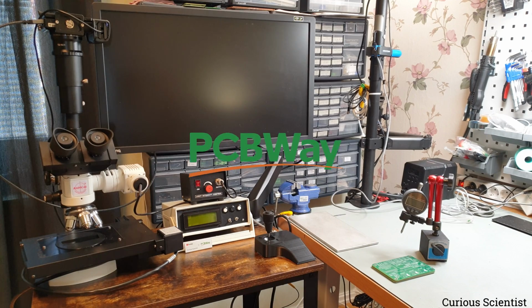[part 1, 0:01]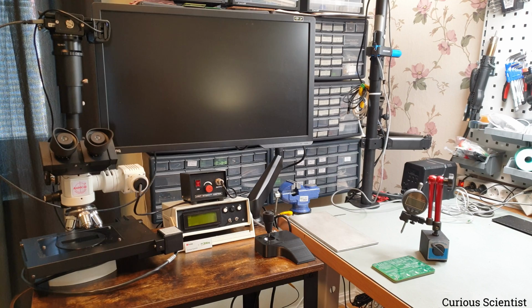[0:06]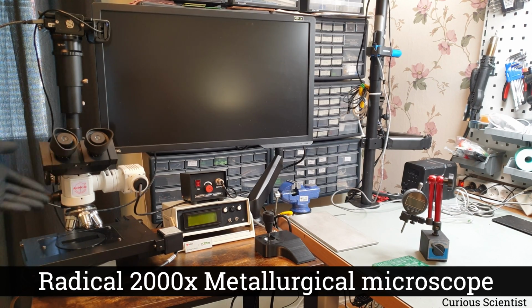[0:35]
Welcome everyone. In this video I'm going to show you the final condition of my motorized microscope. In the previous video I showed you that I assembled the circuit to control the microscope, and I showed you the basic principles of it and how it operates, but not everything was finished in a way I wanted to. So now everything is finished, so I can show you how it works and I can demonstrate the capabilities of this system. Just a little refresher, we have an optical microscope here.
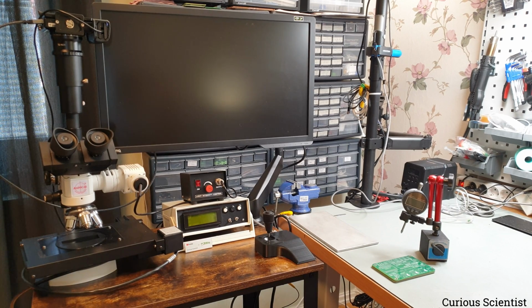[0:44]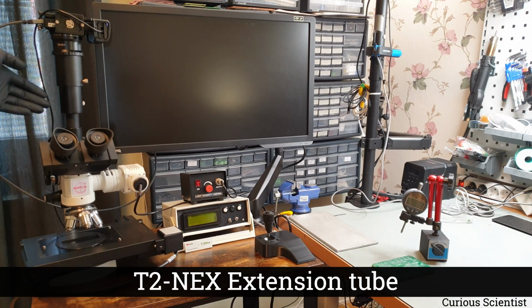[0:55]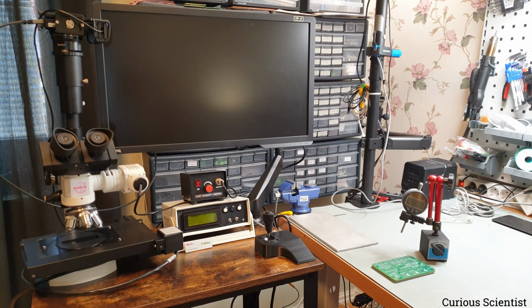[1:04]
It has 4 lenses, and now as you can see it has a motorized XY stage, but in addition to that the Z axis is also motorized. I will show you how it is motorized when I move the camera there. And on the top of this microscope there is an extension tube, and on top of that there is a mirrorless camera which through an HDMI cable transfers the image to that big monitor. So this whole thing is sitting on a cart, and then I just use the monitor arm to have the monitor floating above everything. So it's a very convenient arrangement.
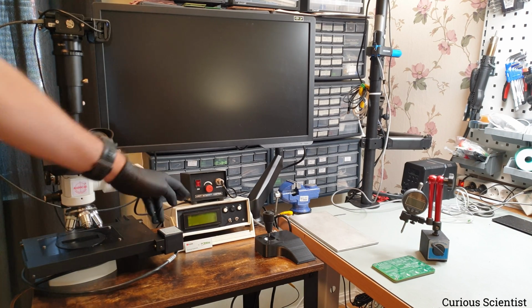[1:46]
And then here we have a box which adjusts the brightness of the light, which is the light source for the microscope itself. So basically the illumination. It's just a halogen light inside this part, and that illuminates the surface of the specimen that we are inspecting. And then under that there is a more important box, and I will show you it inside out when we move closer to it. But that's basically the controller there.
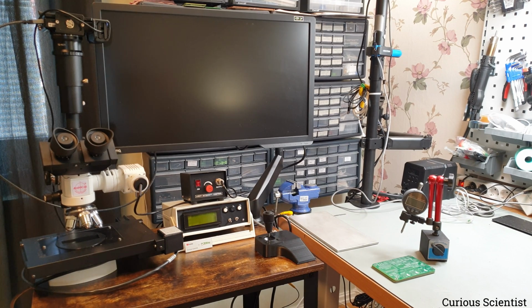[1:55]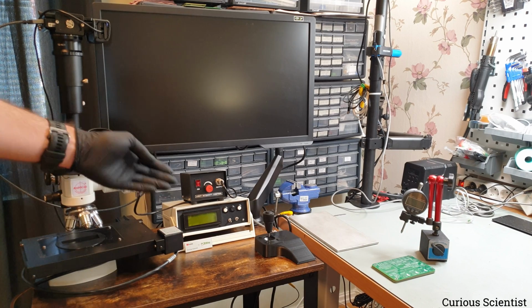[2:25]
It has a display which can be used to display all the relevant information regarding the position of the stage, the condition of the stage, whether we are homing, moving, or the system is in a standby status, and so on and so on. It has 3 buttons, a moving forward and moving backward button, plus an abort or stop button. It has 2 switches because you can select between the modes, like joystick mode, button mode, and you can even control this thing via USB, so you can select that. And when you are in button mode, since we only have 2 buttons, you have to pick an axis, so you can control 1 axis at a time. With the help of the selector switch, we can say that we try to move the X, Y, or Z axis, and then the buttons just move the selected axis.
And there is even a status LED. You will see it better when I move closer to the front panel. And that LED, similarly to the display, tells the user what is happening. There are different colors because it's an RGB LED, and there are different behaviors, let's say solid light or blinking light, and that will tell us what is happening to the system.
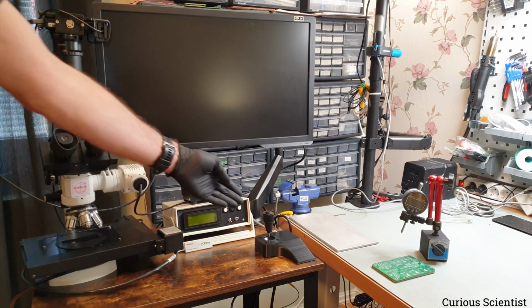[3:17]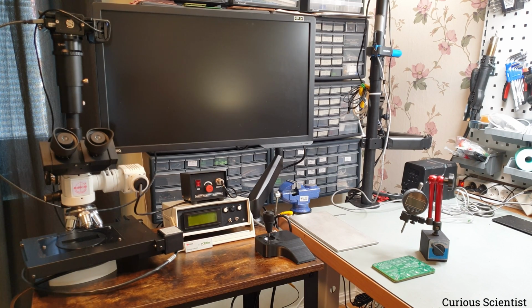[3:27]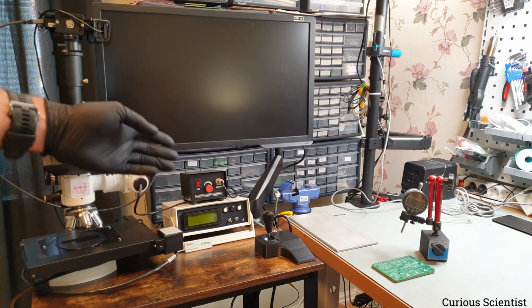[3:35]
And finally, we have a joystick. It's a 3-axis joystick, so it can move left and right, up and down, and then I can even twist the joystick, which actually moves the Z-axis. The joystick is connected, and the system is programmed in a way that the movement of the joystick is replicated by the stage. So if I move the joystick towards the left, then the stage moves in the left direction, and so on and so on. So let's move closer to the box and see what is there.
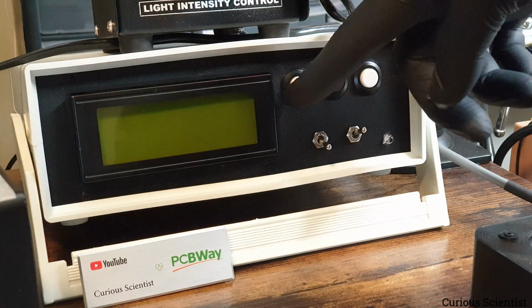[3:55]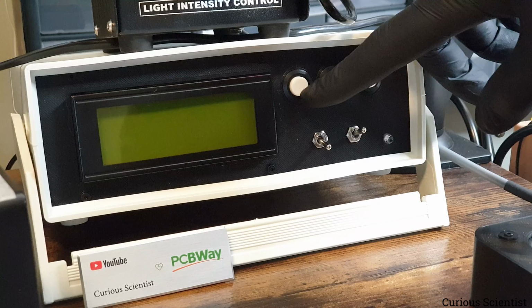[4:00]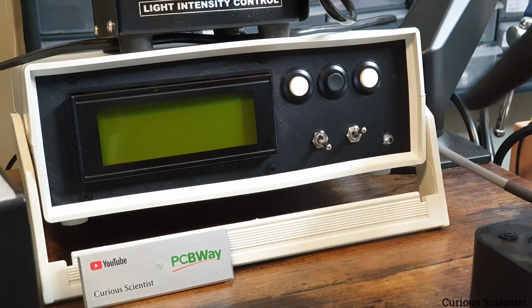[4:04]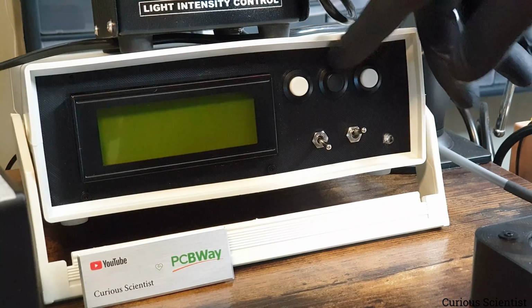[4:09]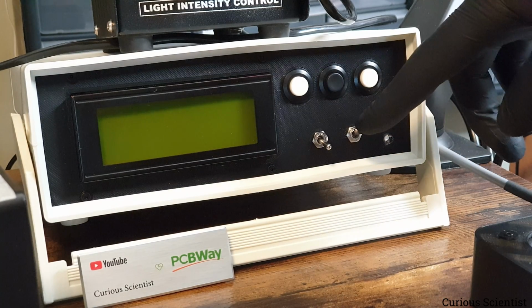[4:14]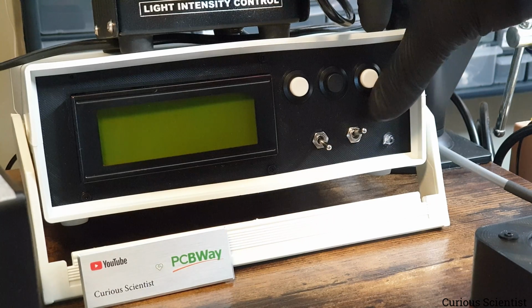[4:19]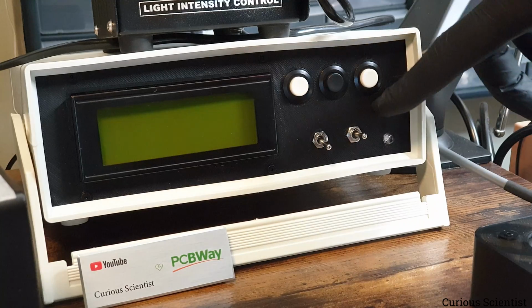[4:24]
As I said, we have the 3 buttons. This will be the forward button, the abort button, and the backward button, or positive and negative direction action. And this is for stopping, and it also acts as the homing button. Then this is the status LED, and this is the mode selection. When it's in the up position, it's joystick, when it's in the center position, it's button controlled, and when it's in the bottom position, then it's USB controlled.
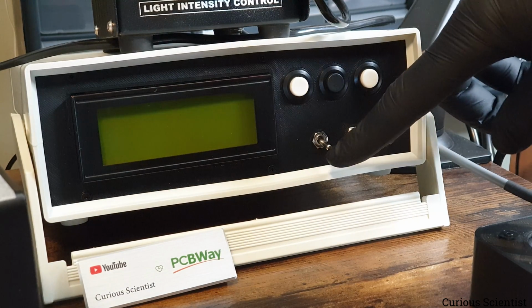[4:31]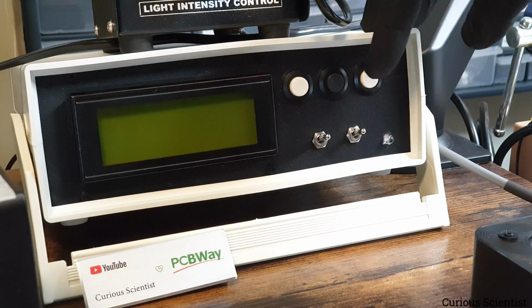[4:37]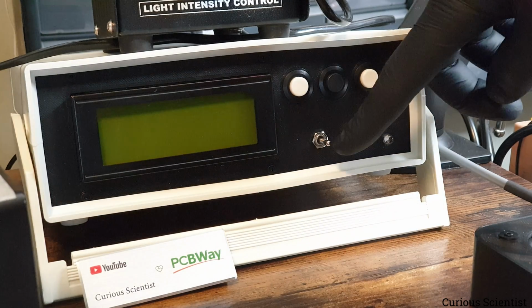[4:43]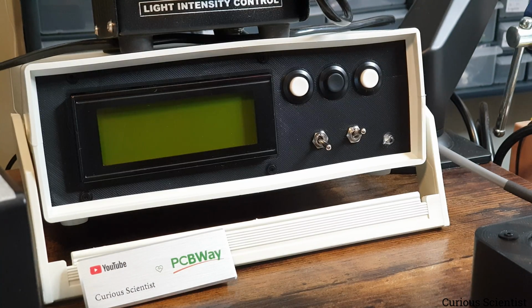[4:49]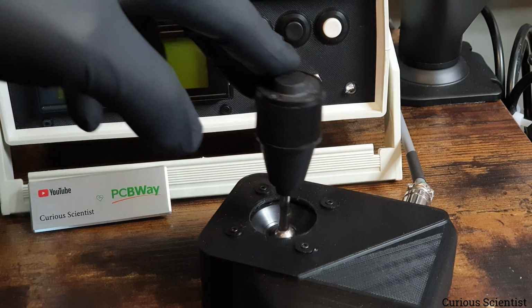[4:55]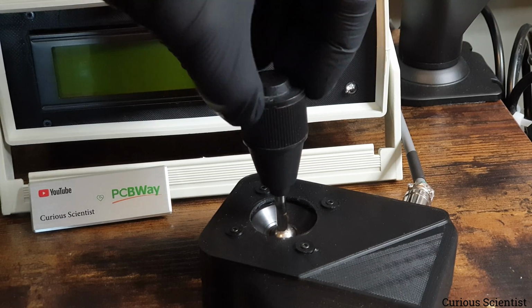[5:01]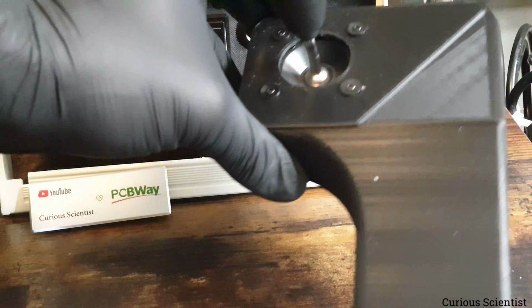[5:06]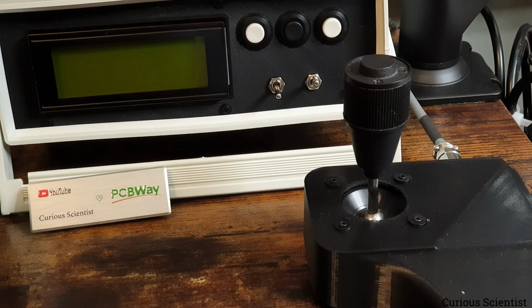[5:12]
Similarly to the previous switch, we have 3 positions here. The top position is the X axis when we are in button mode. In button mode, the middle position is the Y axis, and when I push it to the bottom position, then obviously we have the Z axis left. Then here we have the joystick. As I said, it can move left and right, up and down, and then I can twist it in both directions, and that will move the Z-axis. And this is a 3D printed part. I just designed something quickly in Fusion 360, and then I printed it.
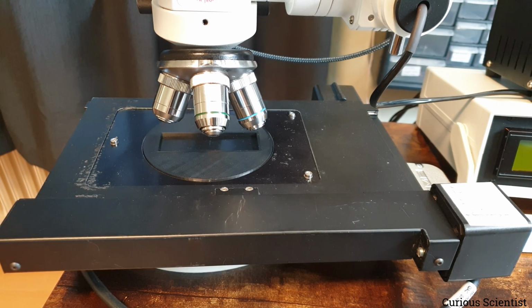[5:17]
So then this is the stage, and the stage is a planar stage, let's call it like that. So it moves in the XY plane. Under this cover there is a lead screw that moves the axis in the X direction, and then under this part of the stage there is another lead screw which moves the stage in the Y direction, and the motor is down here.
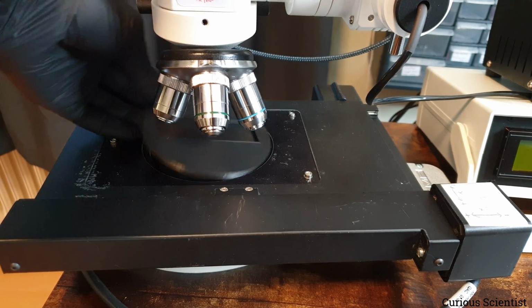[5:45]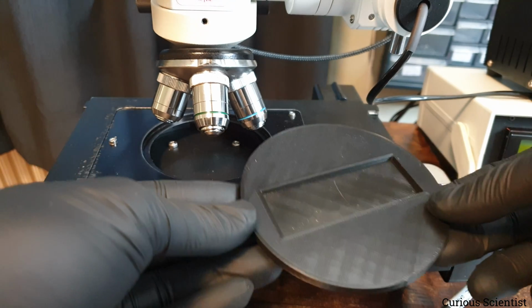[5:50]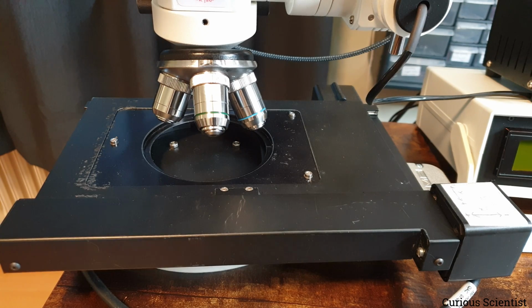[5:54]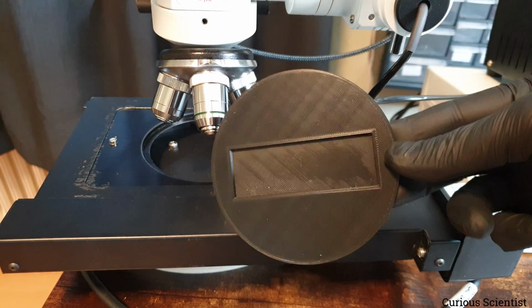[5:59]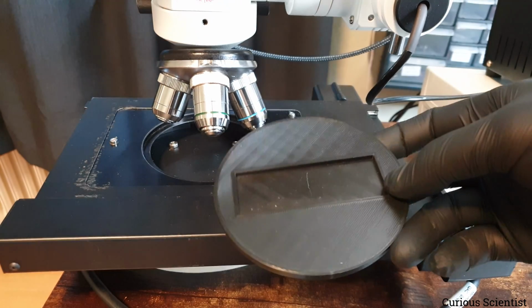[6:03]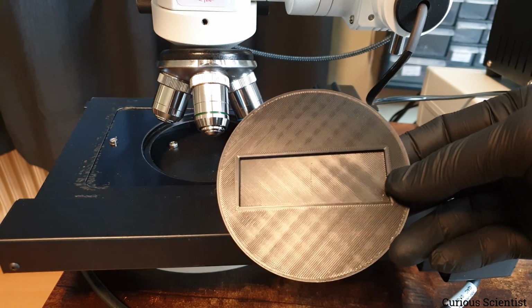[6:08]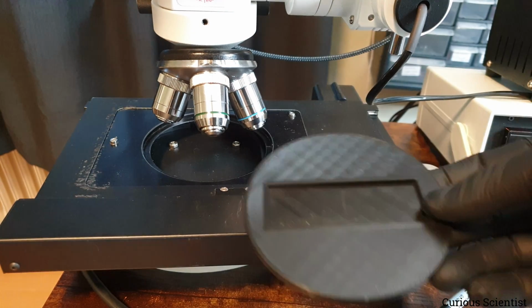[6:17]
And then there is another 3D printed part here, which is just this disc. I printed this because, as you can see, there is a hole here, because the stage originally had some kind of insert like this, but I don't have it. So I just measured the things and printed this. It has a slot there because this slot precisely fits the glass slides that I'm using to glue my transistors and other components on for inspection. So then I can put the slide on it and then just put it there.
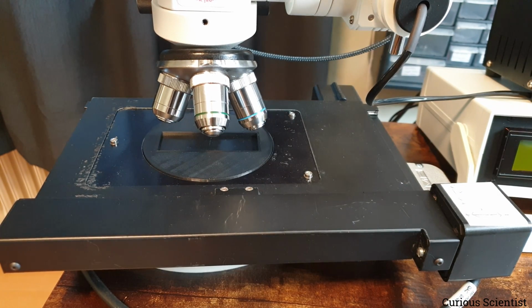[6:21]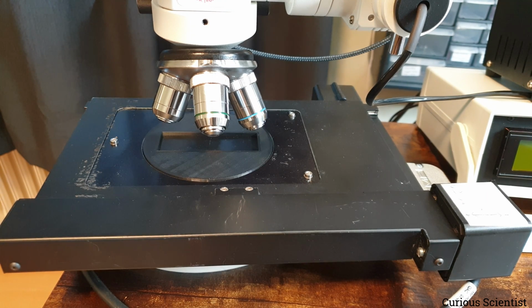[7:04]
And then I also set up the stage and the box in a way that when I home the system, this is actually the home position. Because when it moves to the limit switches, of course the system moves to the extremes and parks there according to the, let's say, default behavior. But then I make the system park in the center. So I marked the center of this insert, and I measured its real world position in millimeters. And then I set up the homing so that it will move to that position. The Z-axis doesn't care about this, so it will just move up, do the homing, and stay 5 millimeters below that position. But we don't care about that much, as we care about the center position on the XY axis.
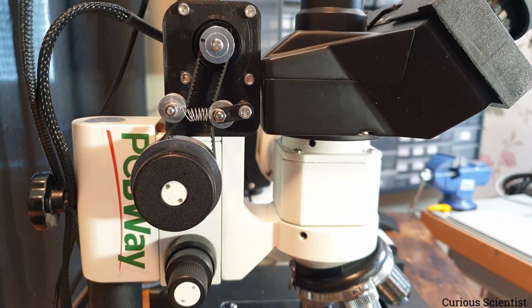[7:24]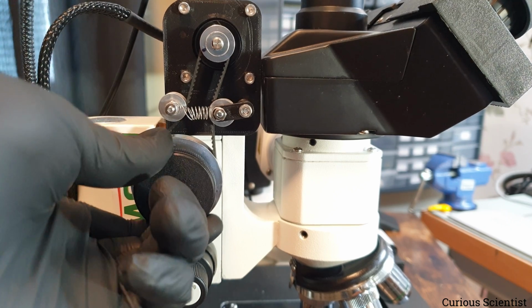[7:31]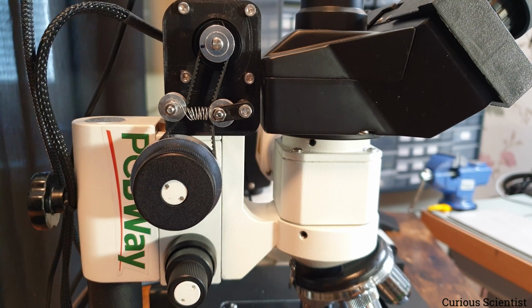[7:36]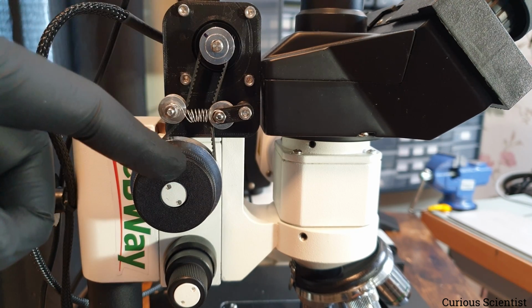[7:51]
So now we are looking at the Z-axis mechanism. This is the default knob of the microscope, and this moves the Z-axis up and down, as you can see. But then I made an attachment here with a stepper motor, which actually moves this knob. I showed this already in a previous video, so check that if you are interested in it. But basically we have a normal NEMA 17 stepper motor up here. It is sitting in a 3D printed bracket. And then there is a GT2 belt here, some simple tensioner here, and then there is a knob here as well.
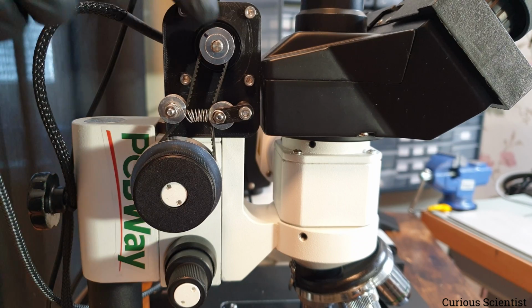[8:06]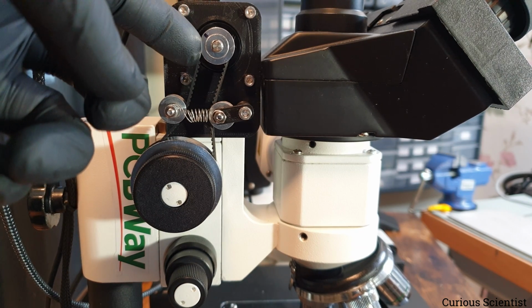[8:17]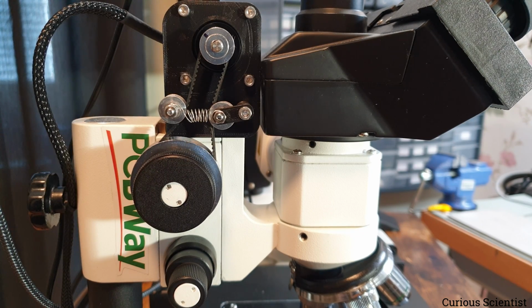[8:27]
And behind that knob there is a pulley wheel. This wheel up here has 20 teeth, and this down here has 60. So we have a 1:3 gear ratio. So while this rotates one full turn, this only does 1/3 of a turn. So this has to be turned 3 times to make a full turn on this. And actually I will move all the 3 stages, and I will show you that they move according to the calculations and according to the values that I'm displaying on the display of the controller.
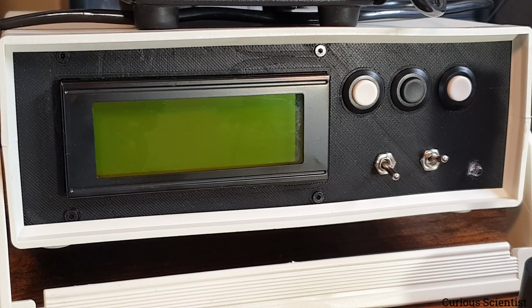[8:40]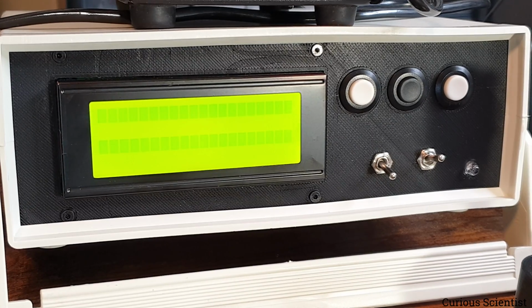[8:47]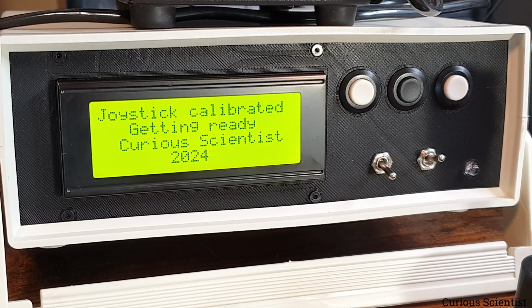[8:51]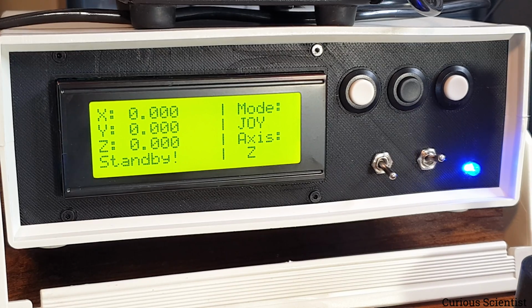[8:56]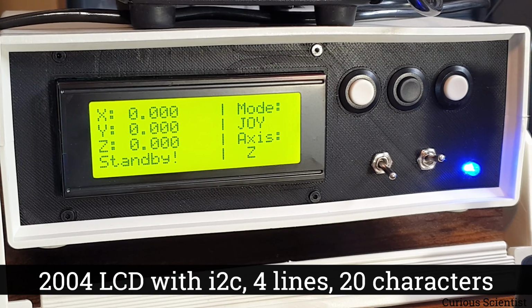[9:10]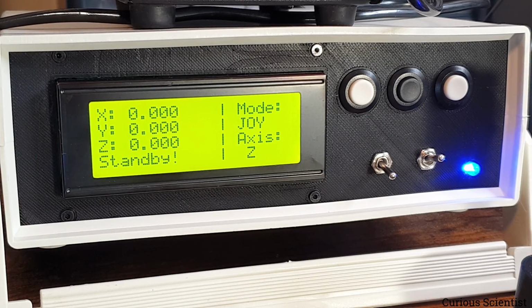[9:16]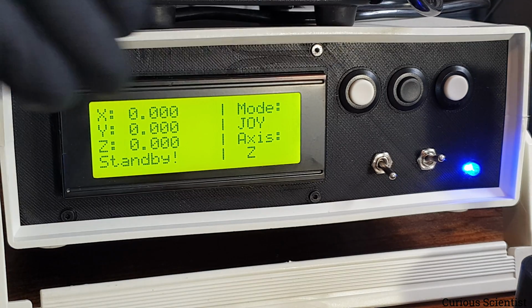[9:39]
So now we are looking at the controller. Let me turn on this thing, and then let's see what is on the display. As you can see, we have several different pieces of information on the display, and the display is split into 2 parts. This is a very simple LCD. If you Google 2004 LCD, then this is the product, but you can check it on my website as well. I could have picked a fancier display, maybe a smaller one, but I picked this because it's easily available, easy to program, and easy to look at because it has large characters, and it also has very good background light. So I like to look at this, and it kind of matches the rest of the design of this unit.
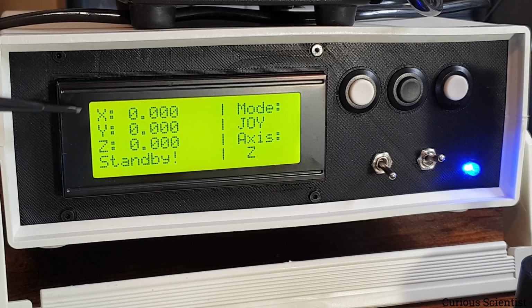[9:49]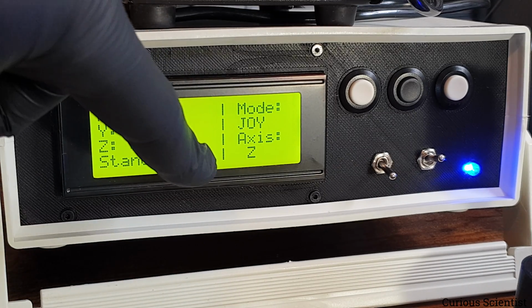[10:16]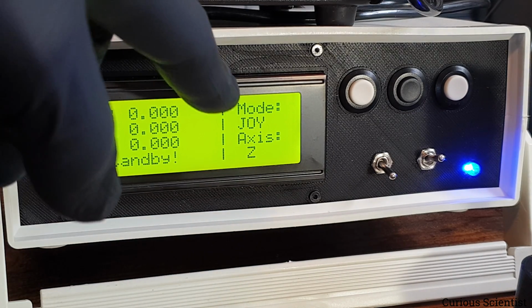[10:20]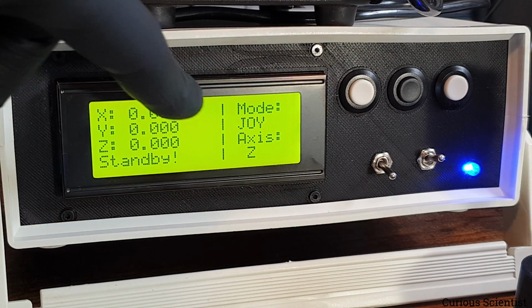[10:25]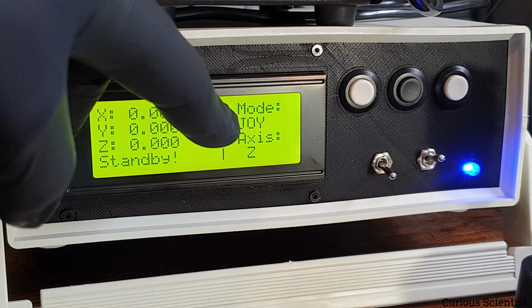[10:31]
What we see here is the following. We have X, Y, and Z positions, and now they are all at 0 because I haven't performed the homing yet. And then you can see that the system is in standby mode, and that is also reflected by the blue LED there. When the system is not moving and everything is normal, it is in standby mode. And then I tried to separate the display into two parts with these vertical lines. On the other part we have two pieces of information. One is the mode, and now we are in joystick mode, so I could control the stage with the joystick. And then the selected axis is Z.
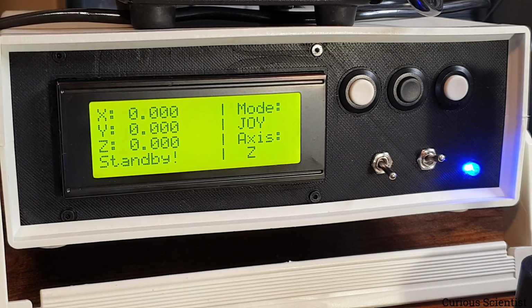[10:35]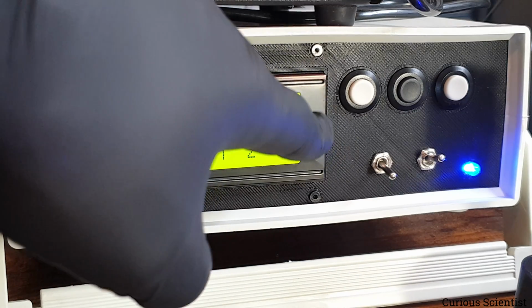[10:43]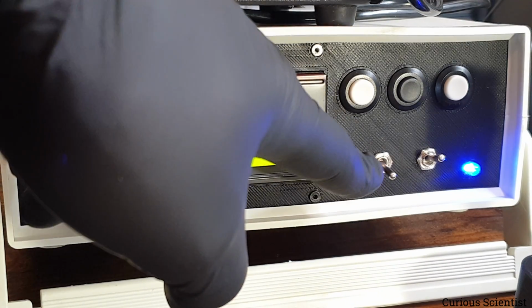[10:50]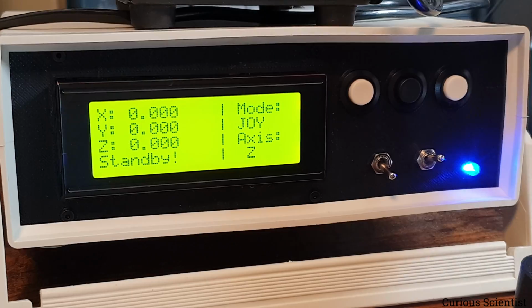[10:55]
So if we are in the button mode, then the actual axis which will move when we press either this button or this button will be the Z axis. I just want to show you first these two switches, how they behave and how they operate. As I said, we have two switches: this switches between the modes, and this switches between the axes. So let's switch through the axes, just so I can show you how it behaves.
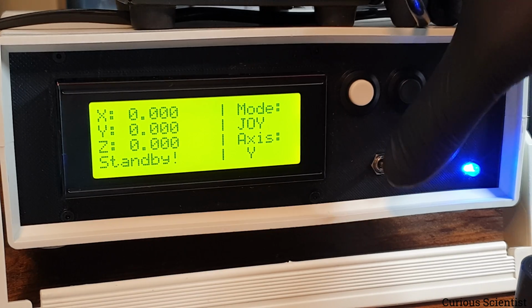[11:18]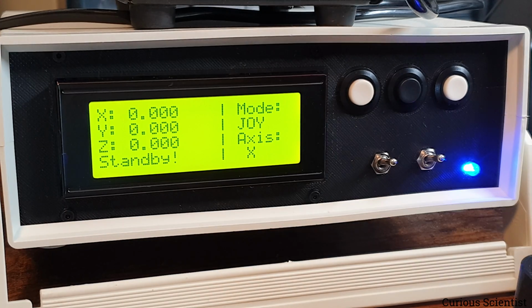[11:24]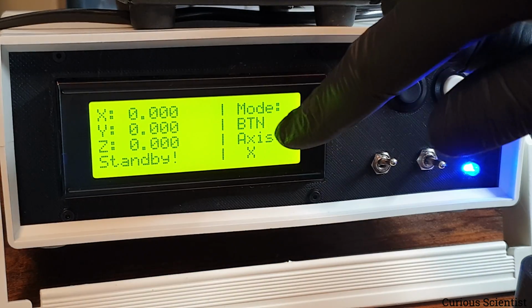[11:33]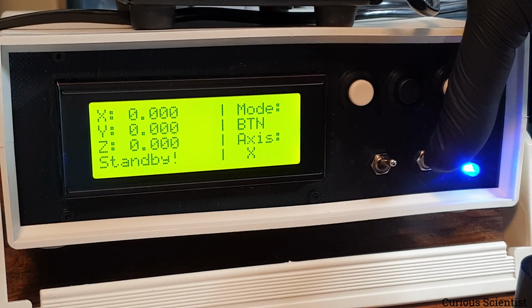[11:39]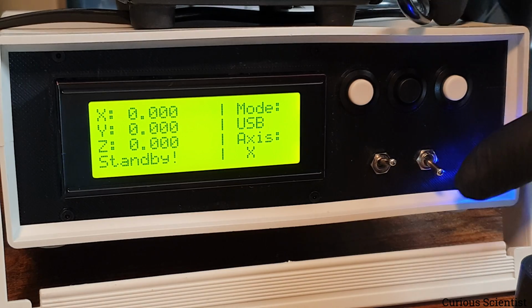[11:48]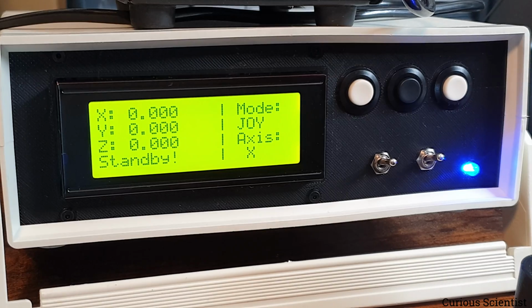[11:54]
So I flip this switch to the middle position, which should switch the axis to Y. Now if we are in a button mode, then the Y-axis is active, and then this is X-axis. And if I change this, now we are in joystick mode, but if I go down, then it becomes button mode, as you can see. And if I go down, it will be USB mode, because this can be controlled by USB commands through the serial port. So that's what we have there. I move back to joystick mode, and then I just show you that I can move the stage with this.
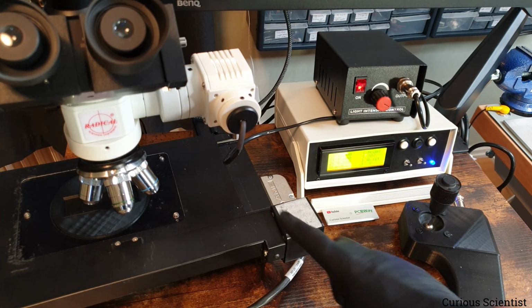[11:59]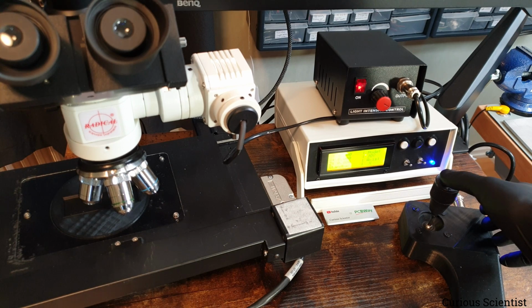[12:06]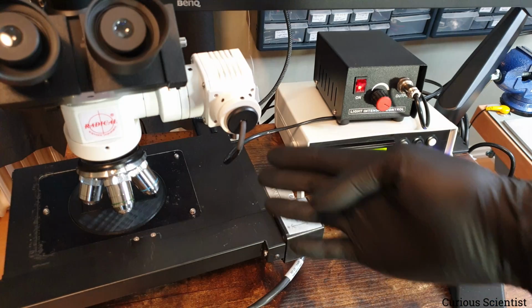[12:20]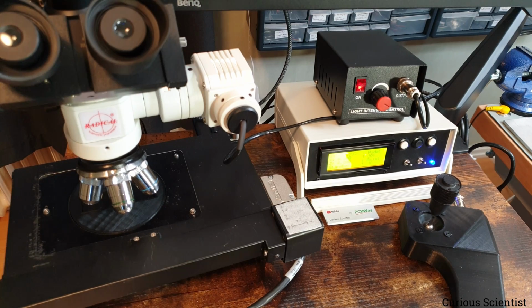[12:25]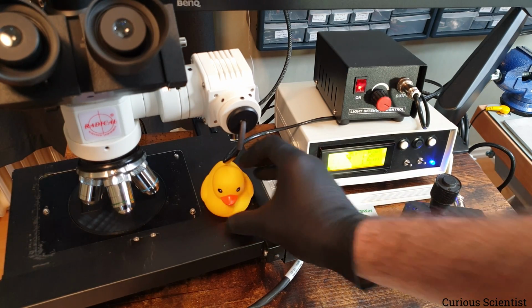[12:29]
Now I tried to align the camera in a way that it shows both the stage and the joystick. So I just show you how it works. I move to the right, then the stage moves to the right. And of course the joystick is also regulating the speed. So if I just move a little bit, then it should move a little bit. But I just bring an object here because everything is kind of dark colored, so it's hard to find a reference spot. So we have a friendly duck here.
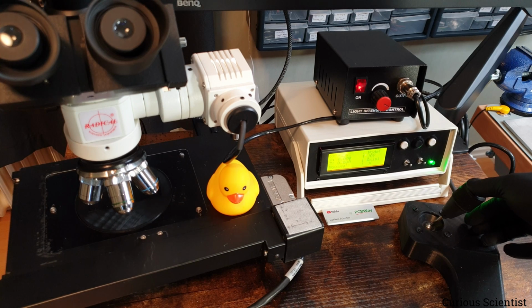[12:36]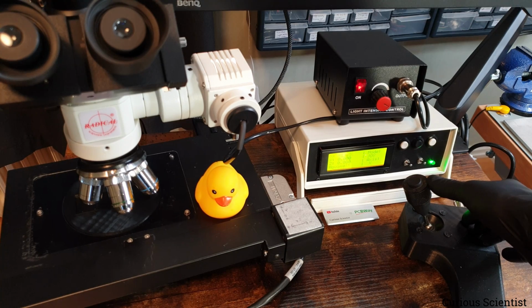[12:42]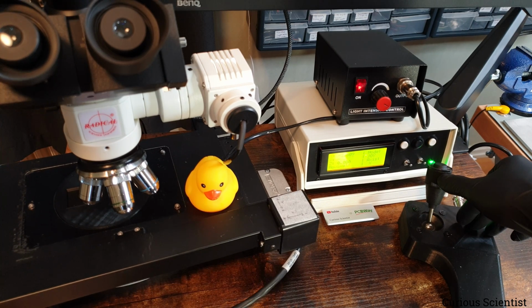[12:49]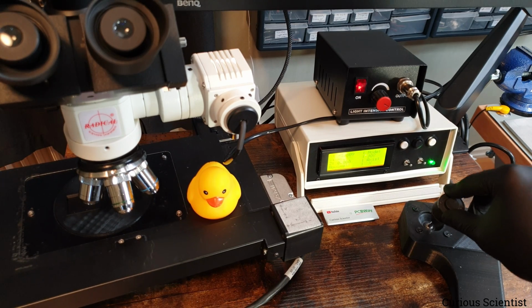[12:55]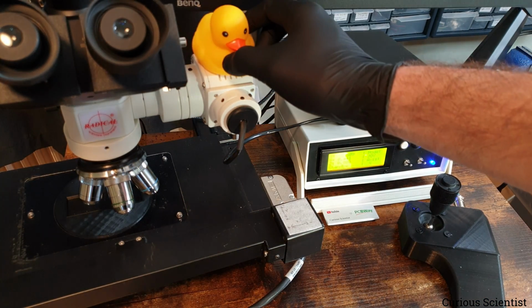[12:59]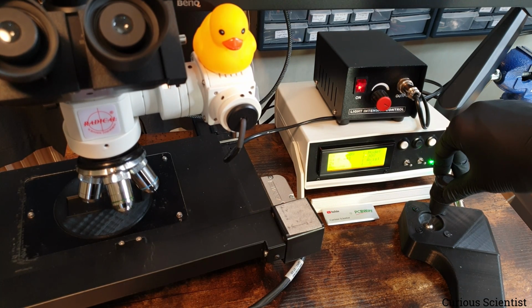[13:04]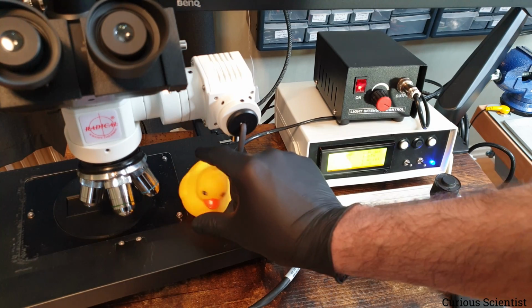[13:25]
So let's make the duck travel to the right and to the left. Now it can go backwards and towards me. And if I put the duck here, then I can make it disappear to some extent. So all the axes move. I can switch to button mode, and then now the X-axis is selected. So let's put the duck back.
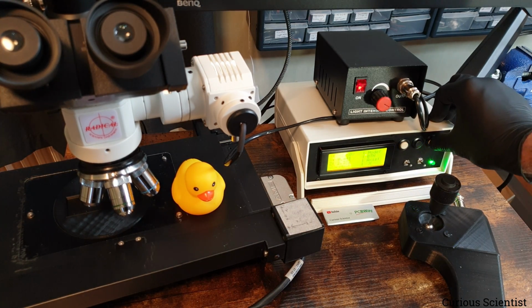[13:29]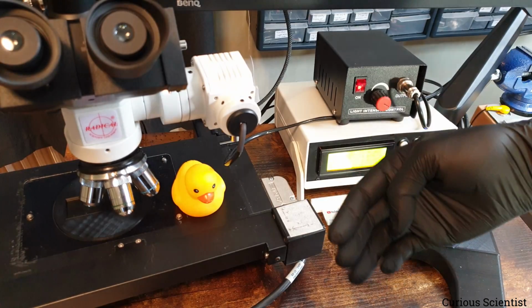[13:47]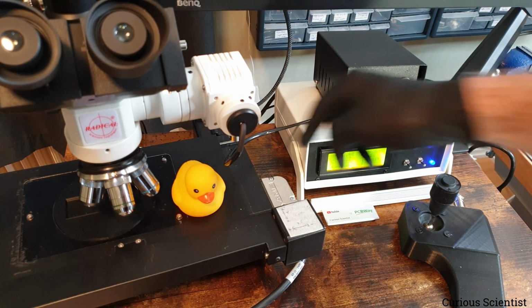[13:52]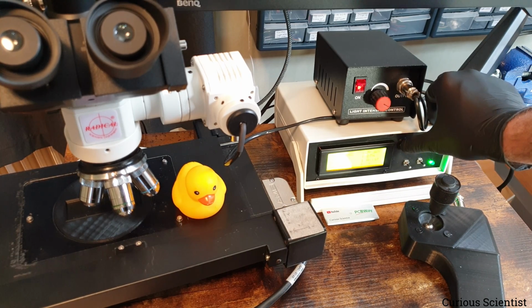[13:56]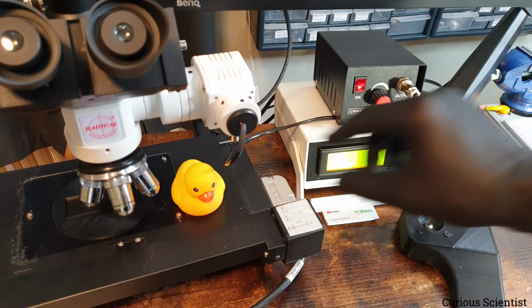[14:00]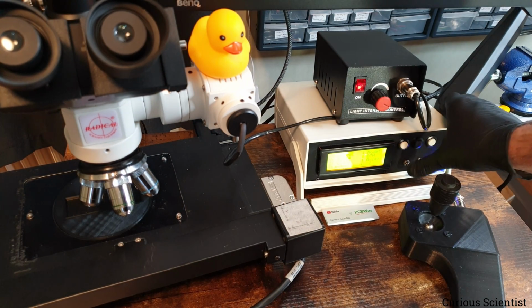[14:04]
And this will be the positive direction. So it moves that way, away from the motor. And then this is backwards. And then I can go to Y-axis. Now the duck is coming towards me because that is, again, away from the driving motor, which is back there. And then this goes back. And then let's put the duck back here and switch to Z. So now the duck comes down, or alternatively I can drive it up as well.
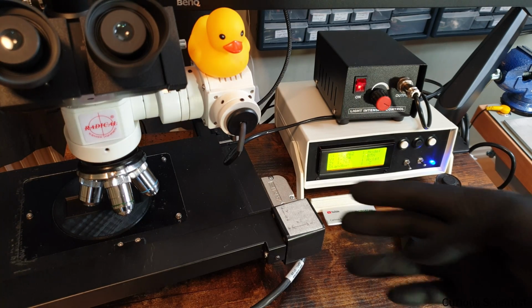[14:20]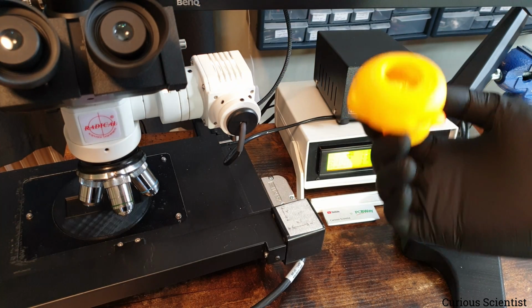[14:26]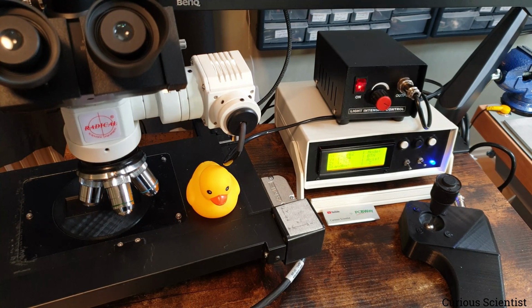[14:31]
So this is all nice, but you could see that, for example, when I was in the button mode, the duck was moving, or the axes were moving, quite slowly. I actually made a solution for that. So if I go back to joystick mode and select a certain axis, and then I press the forward button, then that will apply a speed multiplier. So for example, if I do it in the Z axis, then that will be 5 times the, let's say, default speed that I stored in the code. So let's do it. This is supposed to store it.
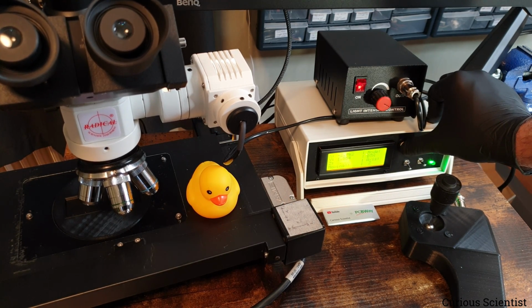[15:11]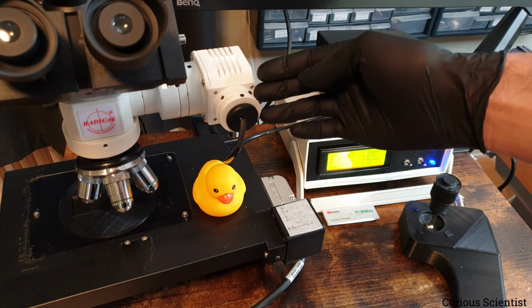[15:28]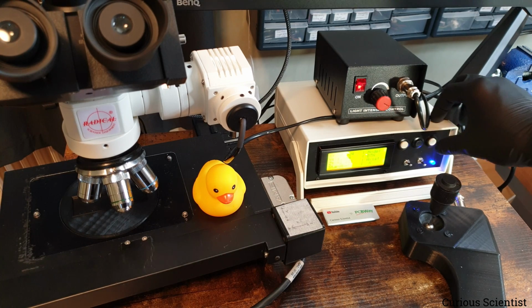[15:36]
So I go back to button mode, and then now we can check if it works. This is the z-axis, so it's not so spectacular. So I go to x-axis. Now it works fast. The z-axis has different multipliers because the z has to move very finely, especially when I try to focus. But now you can see that, and you can listen to it, how fast it moves. It has a different pitch.
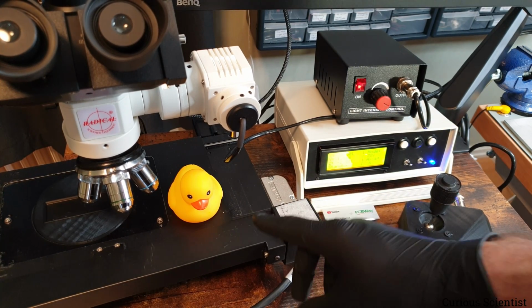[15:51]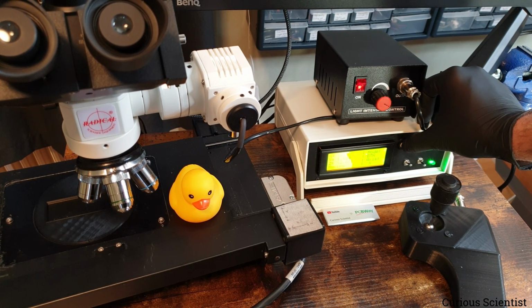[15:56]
So I go back to joystick mode again. And now we are at the x-axis, so I press the forward. And this should turn the speed back to a kind of slow mode. And you can see that now it's slower. And of course there is a middle position. So back to joystick mode, I go to the y-axis, press the forward. Then I go back to button mode, and let's test it. I stayed at y-axis, but it doesn't matter, it's the same speed. Y-axis and x-axis have the same speed. But you can see that this is kind of faster.
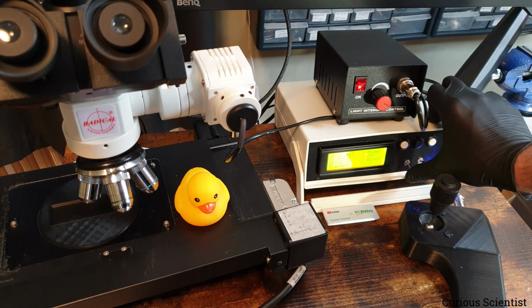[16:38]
And just to show, so joystick mode, z-axis, which corresponds to the fastest speed, and press the forward button. Then I go to button mode, y-axis, this should be fast.
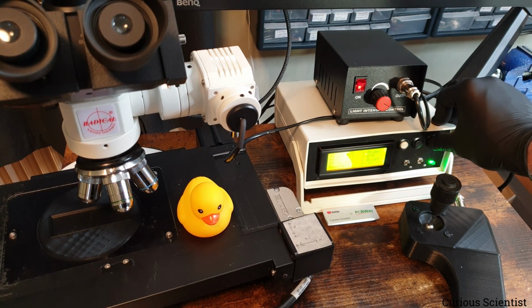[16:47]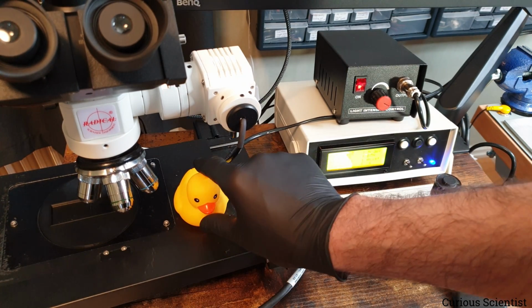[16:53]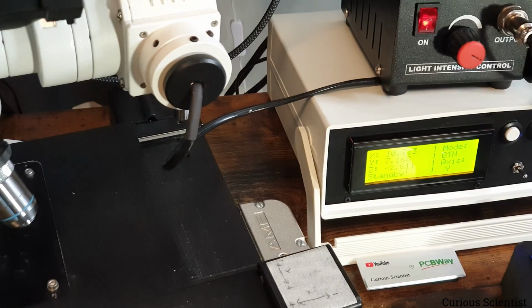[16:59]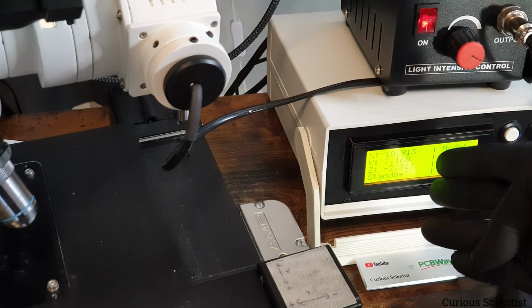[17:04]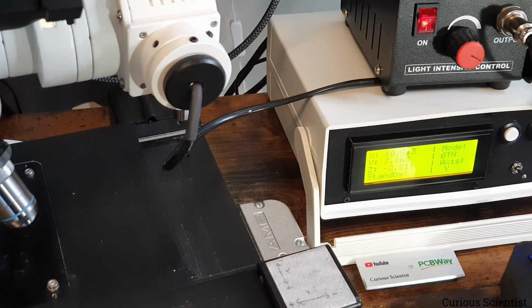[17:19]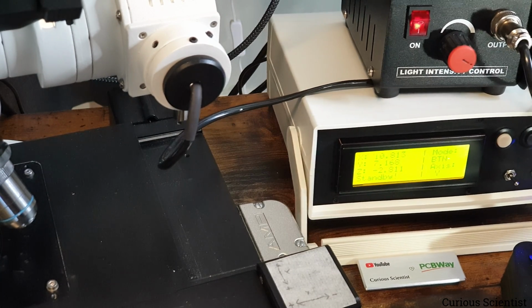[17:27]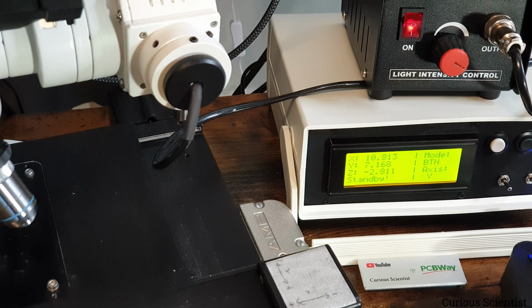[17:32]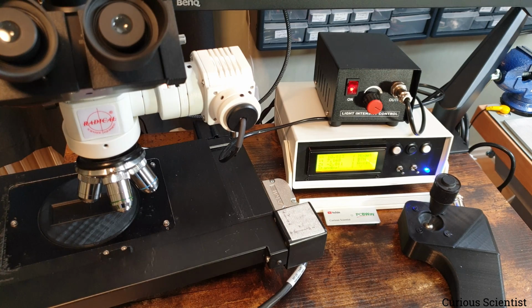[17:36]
So that's that. But now, hopefully you can see on the display that we have very different numbers here. And those positions are actually not really calibrated, or they are not well-informed positions per se, because we don't know compared to what that is 10 millimeters or 7 millimeters or something, because there was no homing. So what I do now, I press the middle button, which is not visible, but this black button there at the very right side of the picture, and that will initiate a homing. So let's do that.
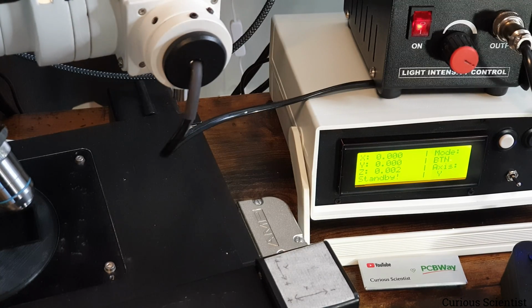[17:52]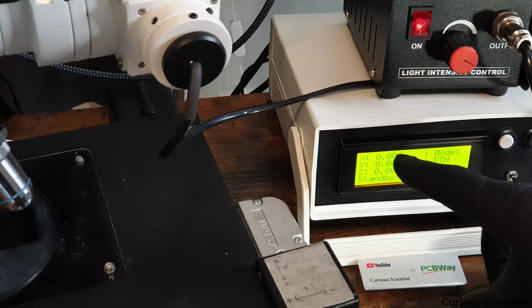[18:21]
So the homing is completed, and as you can see, nearly everything is at the 0 position. Sometimes I get some garbage number here, which I will fix, but the basic reason for that is that when I do certain divisions to convert the number of steps into millimeters, there might be some rounding errors. And because of that calculation, sometimes I can end up with those numbers, but that is basically 2 micrometers.
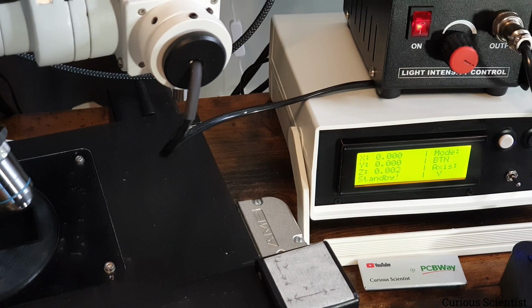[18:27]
So does it really matter? Probably not, because we are observing 1,000 times larger sizes. So I just basically don't care. But if I wanted to, I could make that 0 perfectly as well. So now we are at the home position. I want to show you that those numbers actually don't lie.
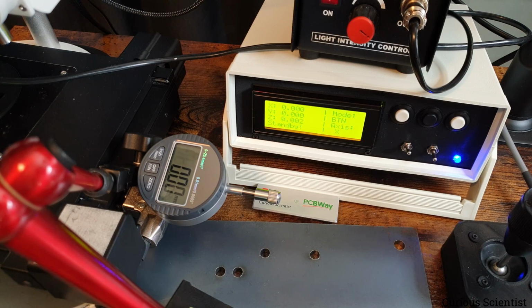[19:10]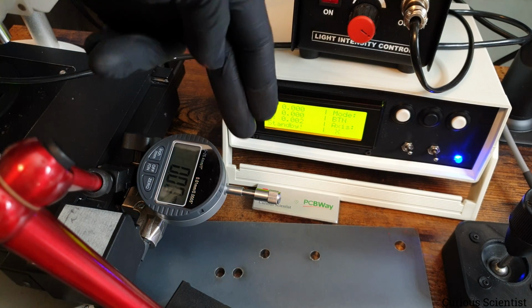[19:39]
So I have a dial gauge, and I will fix it to the 3 axis, and then we will move everything and see how precisely we can move to a certain position. So I set that thing up now. Okay, so we have everything arranged here now. As you can see, we have some metallic plate here. This is one of my old metallic plates for my DIY tensile testing machines. The reason I have it here is because the arm, the holder for the dial gauge, is magnetic. If I did not use the metal plate under it, it would slide away because of the spring inside this needle. So I needed some magnetic thing under it, and that's what we have here.
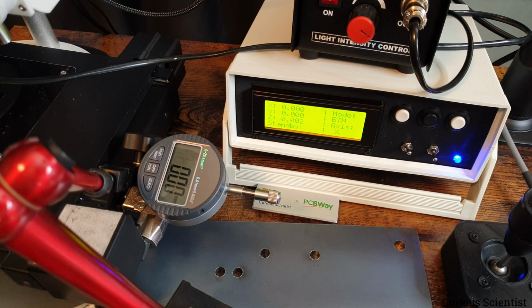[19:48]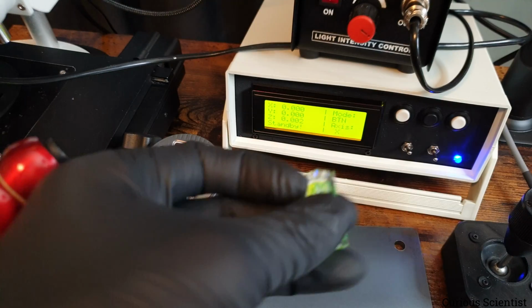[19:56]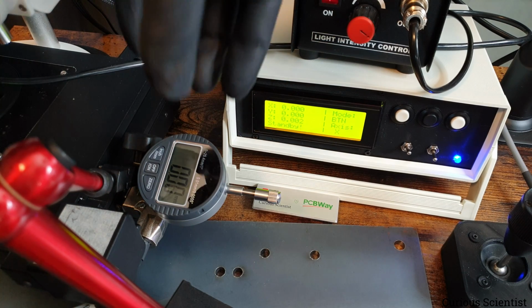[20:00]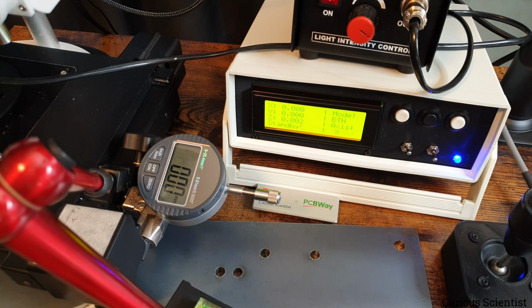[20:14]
And then I tried to carefully align this flat. First I made sure with this water level that I aligned it flat, and then I slightly tilted the display. Then it just rotates in the socket, so it should still be level. So the needle will move parallel with the stage, hopefully. And then I aligned the camera so that we see both displays very well, hopefully. So everything is in the correct mode. The x-axis is selected, and that's what we are measuring. And button mode is selected. So let's move with the button and let's see how these two numbers align. Oh, and while I press the button, observe the color of the LED.
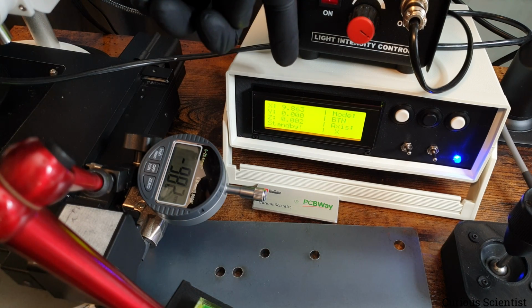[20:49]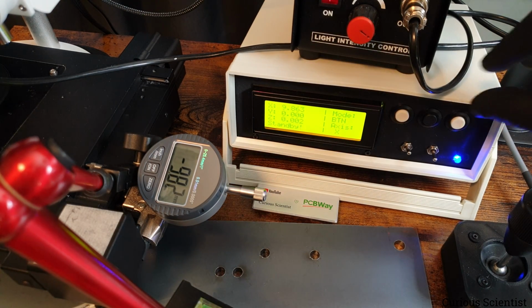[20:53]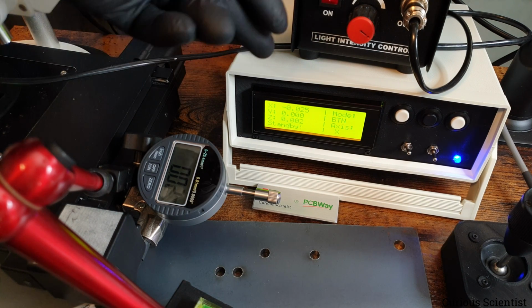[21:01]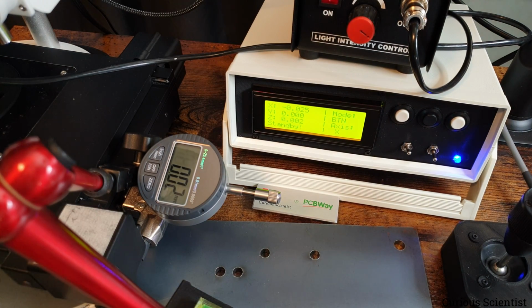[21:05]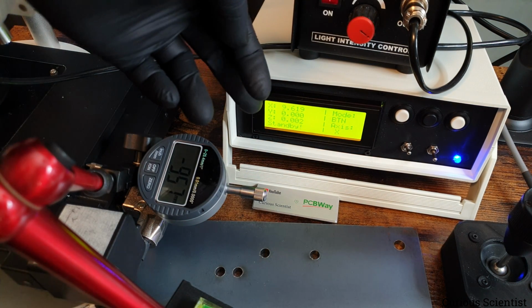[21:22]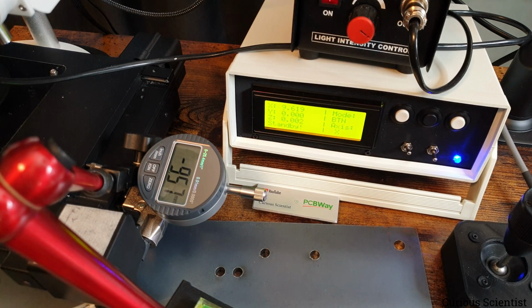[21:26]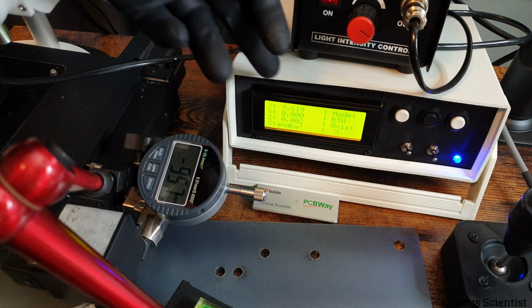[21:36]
So what we have here is 9.82 and here is 9.863. So close enough. And if I move backwards, 0.02, minus 0.02, both of them started from 0. This should also be negative, so there is a small discrepancy there. So let's move again. So 9.61, 9.57. That is also close enough because 61 minus, or let's call it 62 because the last digit is 9, 62 minus 57, that should be 5.
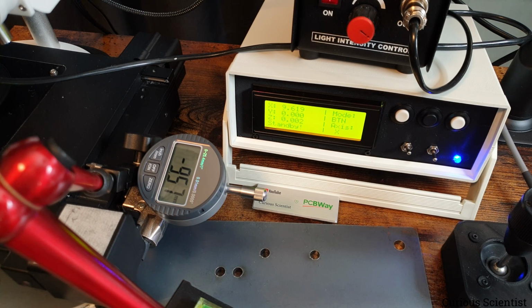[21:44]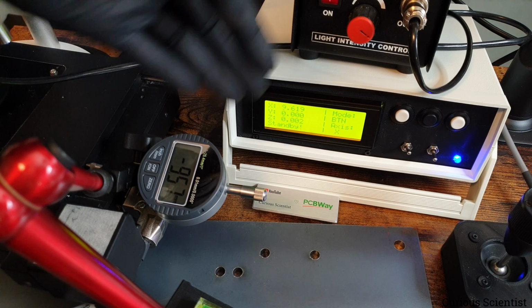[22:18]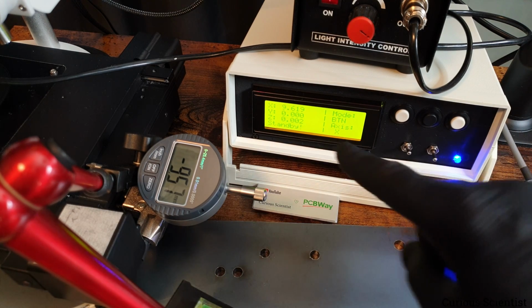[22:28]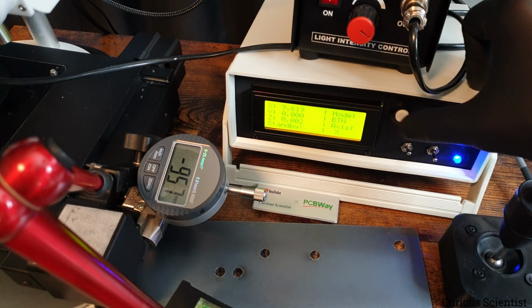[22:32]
So 0.05 millimeters or 50 micrometers difference. The principle in the box is just using the number of steps from the motor and the pitch of the lead screw that moves the stage. So that's a pure mathematical formula. And then this one is whatever equipment, but we don't know its accuracy. Despite these unknown things, the discrepancy between these two things is just 50 micron. 50 micron is the thickness of a human hair. So I don't really care about that difference. So we get reasonably good numbers on the display. That's what I'm trying to say here.
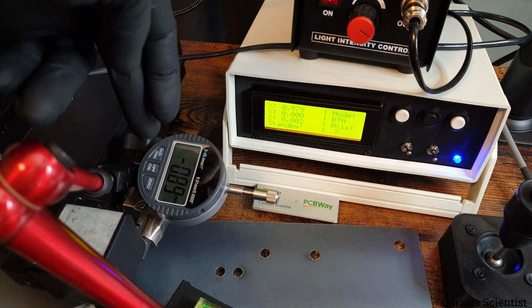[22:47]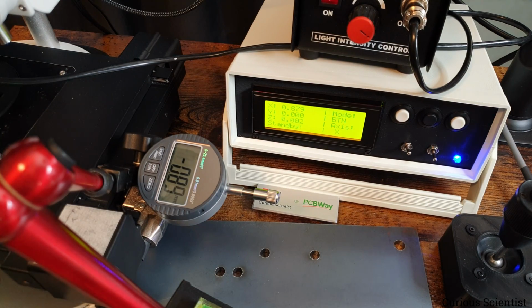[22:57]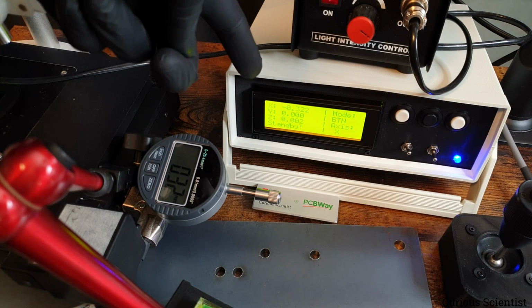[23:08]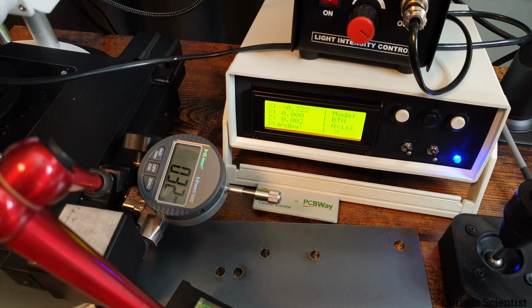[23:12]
So it's moving as it should. And now I see the negative number here. I was wrong, because we are always moving on the negative scale. So actually that 0.02 was correct, or 0.2 on both sides. It was kind of something like this. But you can see, because when this turns positive, then that's negative. So I was wrong, but the system was correct. You can see that it moves correctly. So 45, 49, it is what it is.
I still accept that difference because again, let's say 40 micrometers, again human hair order of magnitude. So the x-axis moves with this kind of tolerance and precision, and the y-axis is exactly the same lead screw, the same backlash correction or anti-backlash nut, and the same bearings. So I would not test that because it would be the same results, hopefully. But the z-axis is more interesting. So let's check the z-axis.
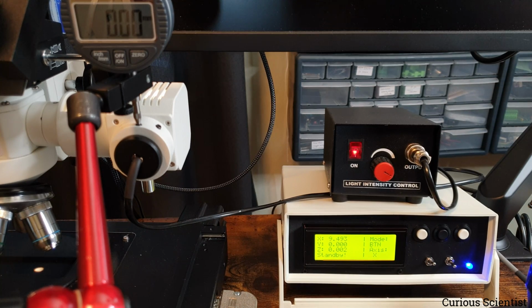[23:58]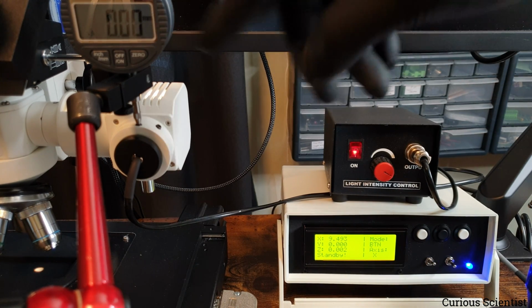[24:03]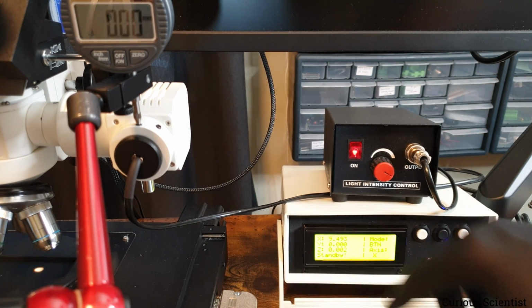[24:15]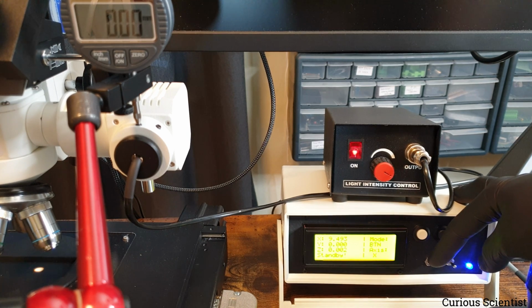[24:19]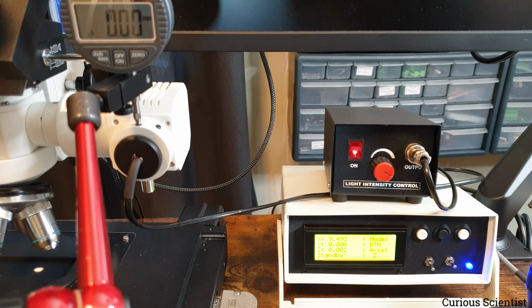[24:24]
I could not put both of these displays in focus, but the digits are large enough on the dial gauge that they will still be visible despite the fact that it's a bit blurry. But what is more important, I think, is on this display. So I select the z-axis and I'm still in button mode. So now I just move in the positive direction and see what happens.
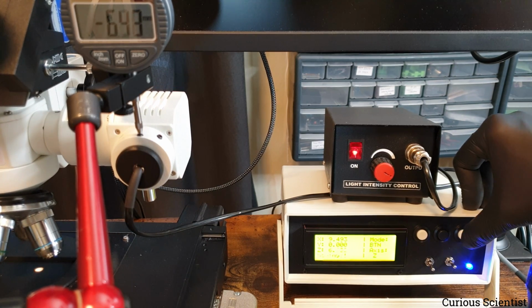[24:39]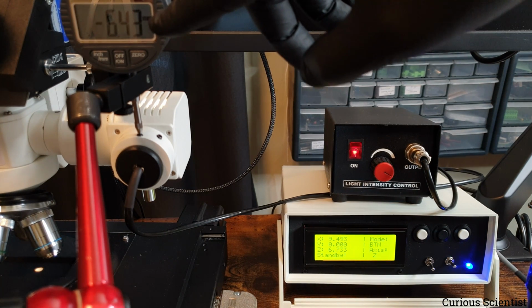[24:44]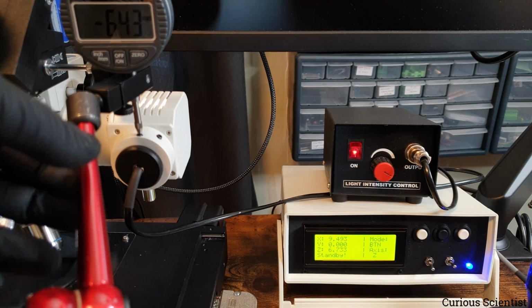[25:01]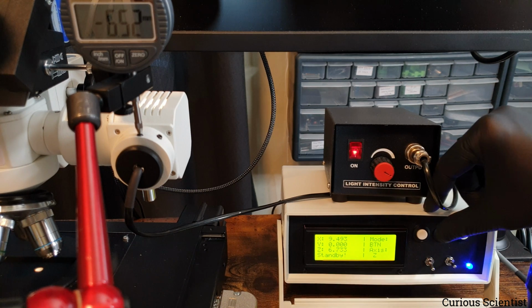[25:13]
So you can see that both the numbers and the z-axis move down. So I just stop right here, so this is easier to read for me. Minus 643, positive 6733. So there is a little discrepancy, 300 microns, but it's not too bad. And also the problem could be that I attached this in quite a wonky position. So you can see that now it's 52. So trust me that this is good enough accuracy, but let's move a bit backwards.
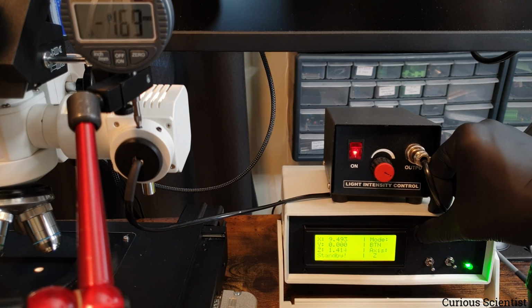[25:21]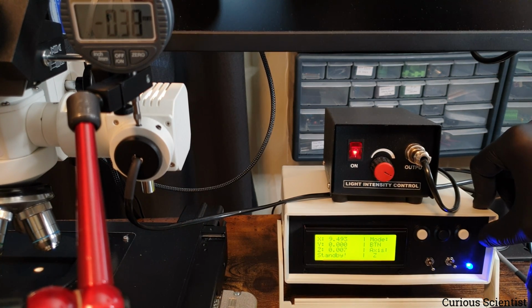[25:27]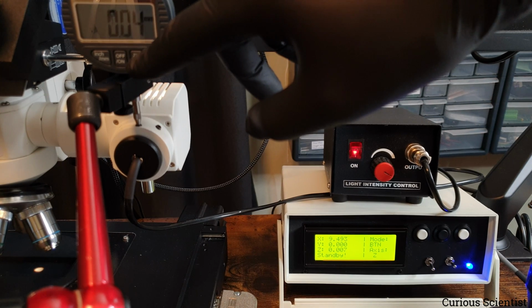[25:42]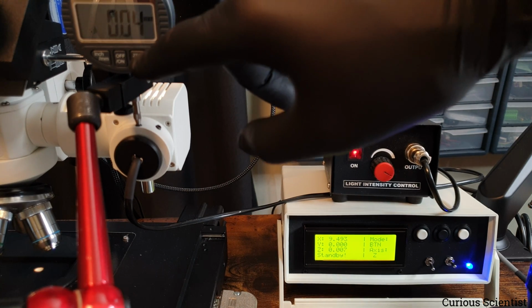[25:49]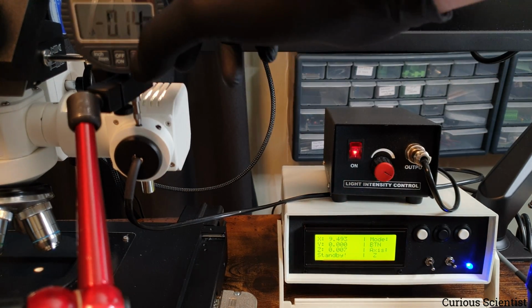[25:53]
So I move back close to 0, just so I can zero this. And you can see that this is such a silly design that you have to press the button with such a strong force that you can actually move the whole thing, and then it will never tare at 0. So you can see that it's a bit of a silly device. But yeah, it's hard to fix.
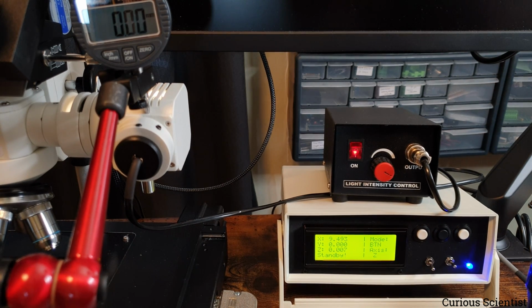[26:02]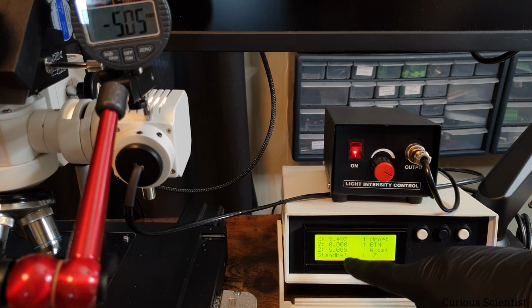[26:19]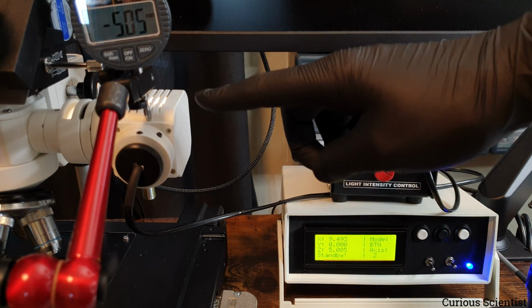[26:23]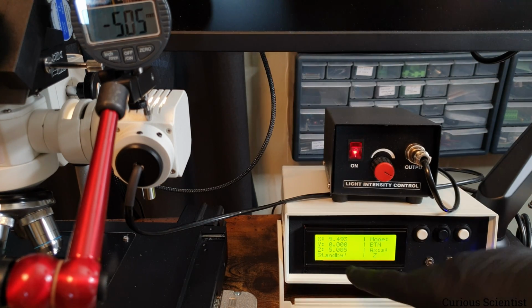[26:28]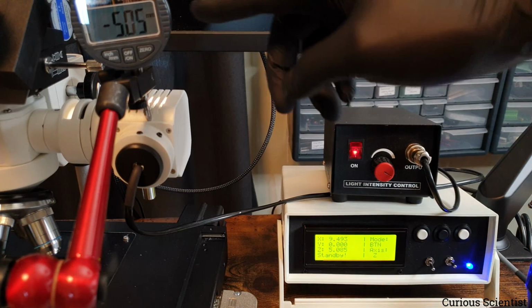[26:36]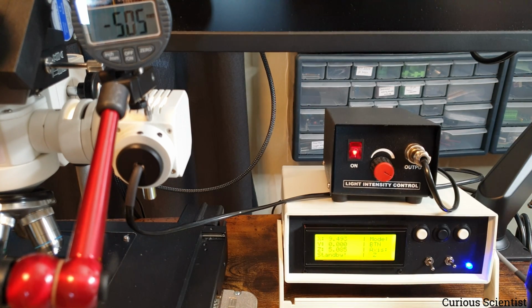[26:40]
So now I fixed it at a different place, and remember that the last digit here is 7, the third digit. So now I move. So 505 on the dial gauge and 5085 on this. So by just rearranging this, and still it's a wonky setup, I could improve the number of digits here, in the sense that it's better because this thing can move better. So now the discrepancy is basically 30 microns or even a bit less, which is again in the order of magnitude of the human hair thickness. So I kind of accept that.
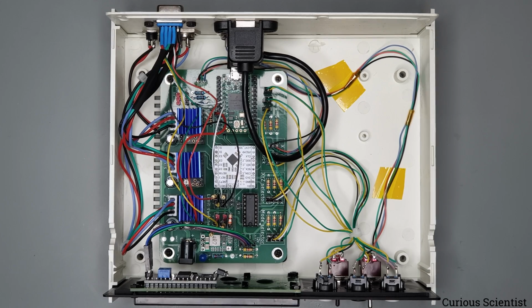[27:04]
So now I want to go inside this box and just show you how everything is connected and what it looks like, so you can understand the principles of the electronics behind this machine. So this is the inside of the box, and you could be already familiar with this because I showed it in a previous video, but I just want to go through what kind of modifications we have here and how things look. So just briefly about the circuits used in this printed circuit board.
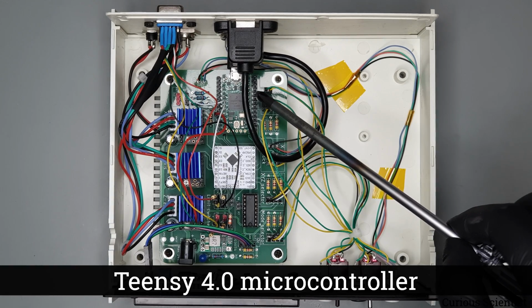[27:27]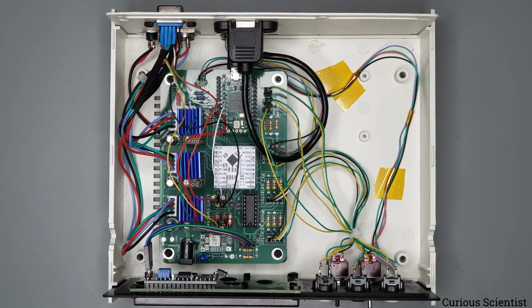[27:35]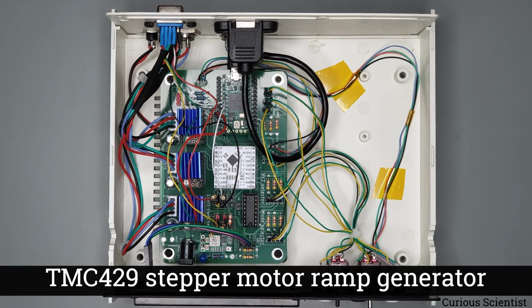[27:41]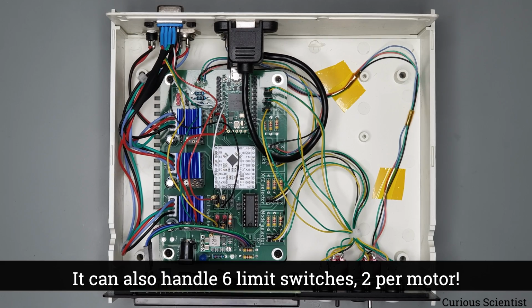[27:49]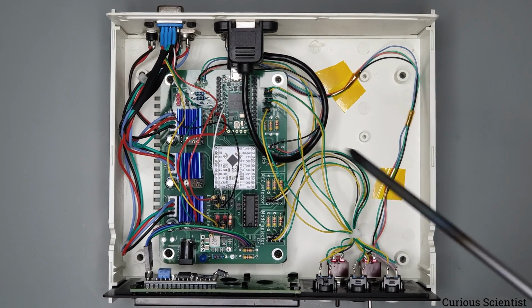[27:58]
So we have a Teensy 4.0 microcontroller that controls everything, basically. It's a high-speed, high-performance microcontroller, so I really like to use it in this project. And then we have a TMC429 ramp generator. It can control 3 independent stepper motors, and it can generate the step and direction signals for them. And its advantage is that it unloads the Teensy, basically, or any microcontroller that you use. Because how it works is that the microcontroller sends out a serial message to this device here, to the TMC429, and then that's that.
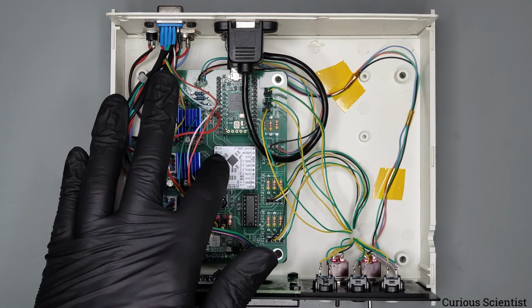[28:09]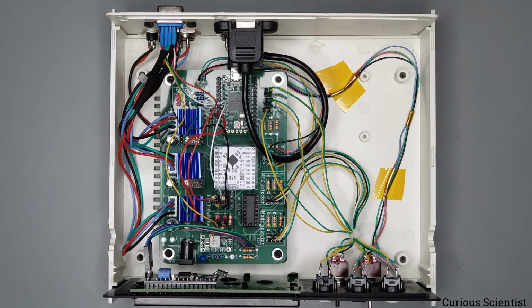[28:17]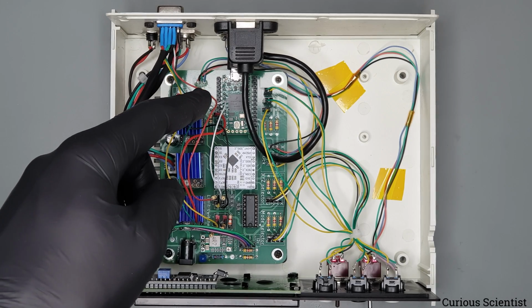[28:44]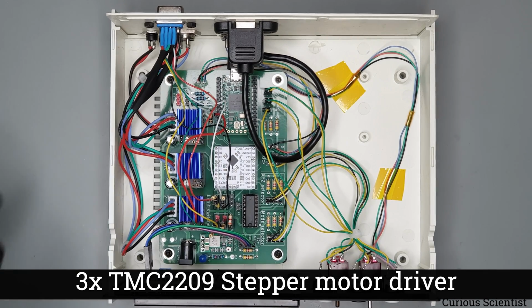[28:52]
And then the device here just does its job and sends out the signal to the 3 individual TMC2209 stepper motor drivers. Because if you use, let's say, the AccelStepper library and you drive a stepper motor, then you have to toggle the pins of your microcontroller, which takes CPU time and blocks the CPU. But here you don't have that issue, because the only time when you block the CPU, and that is just a very short, brief period of time, is when you send out the message on the SPI to the TMC429. So that's that.
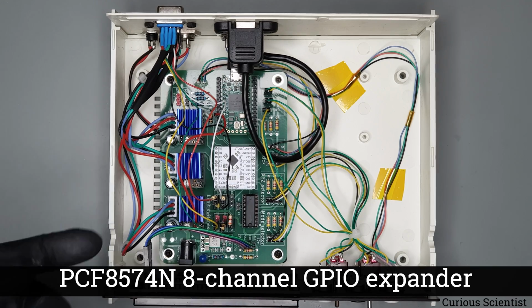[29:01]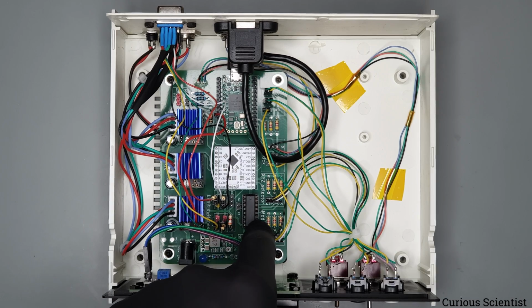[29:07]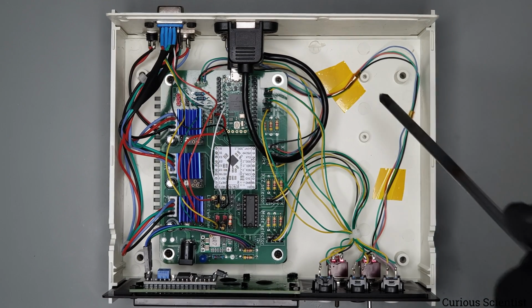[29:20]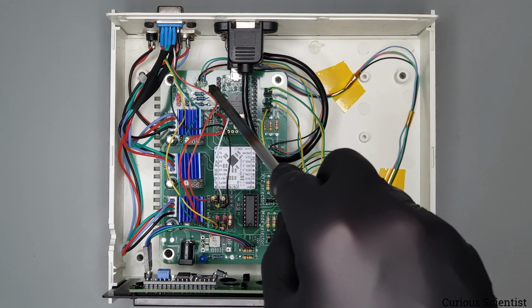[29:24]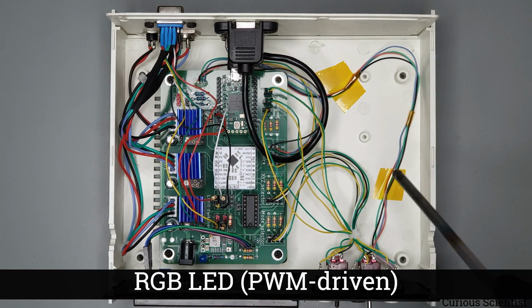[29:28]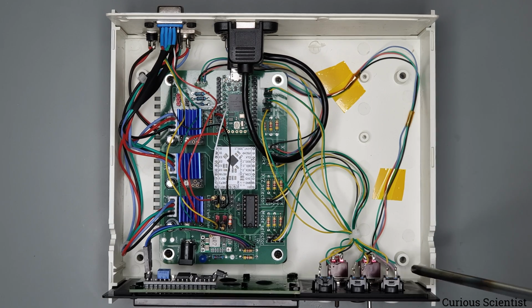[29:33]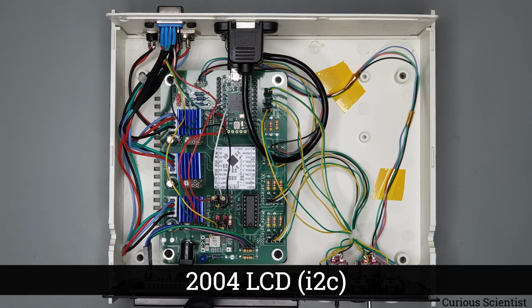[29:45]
And then, yeah, we have the TMC drivers. I already mentioned them. Here I have a GPIO expander because I have the switches and the buttons that I need to take care of. So I actually use this expander to poll these switches so I can see if something changed in their status. And the polling is enough here. I don't need interrupts. And then you can see this cable. Originally there was an RGB LED here, but then I just brought those 4 connections to the front panel. So then the RGB LED is also at the front of the enclosure. And the PCB also has a dedicated I2C connector here, that allows us to connect this I2C display.
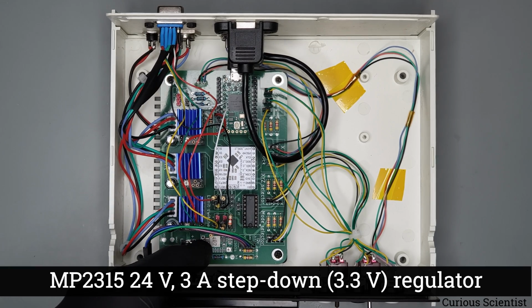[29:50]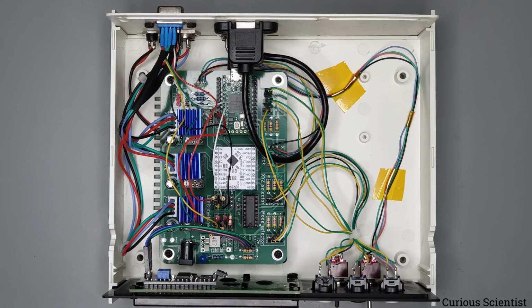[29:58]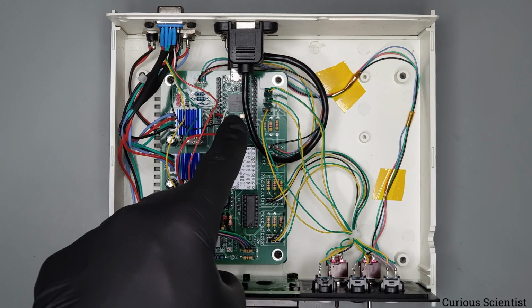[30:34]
And there is an onboard voltage regulator here, that just provides 3.3 volts to everything except the Teensy, because the device is also compatible with PC communication, so I wrote the software for this in a way that the user can send commands to it. So in that case, I found it a bit difficult to separate the power supplies. So what I do here is that I just say, okay, everything except the Teensy is powered from the external power supply. And then the Teensy has to be powered by its own supply. So we have a 12-volt adapter for most of the circuit except the Teensy.
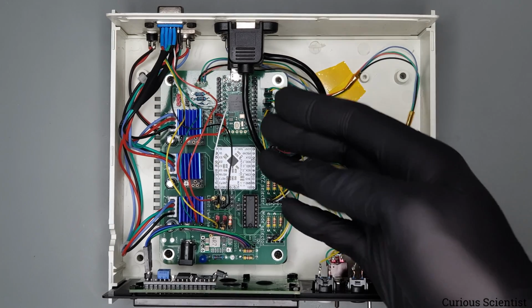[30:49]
If I use it in a standalone mode, like in this video during the demonstration, then that is just powered from a wall adapter as well, a simple USB phone charger. So then that is basically what is inside this box.
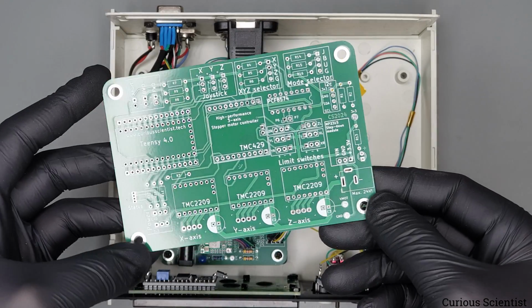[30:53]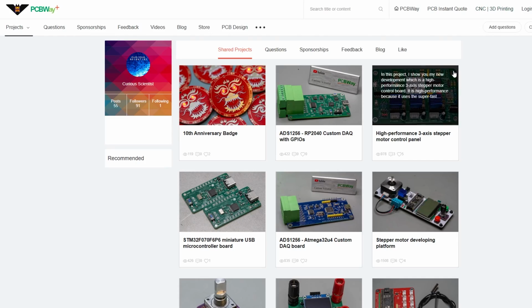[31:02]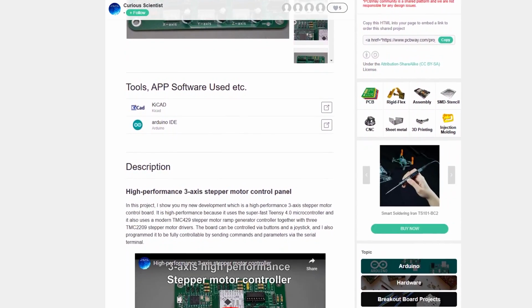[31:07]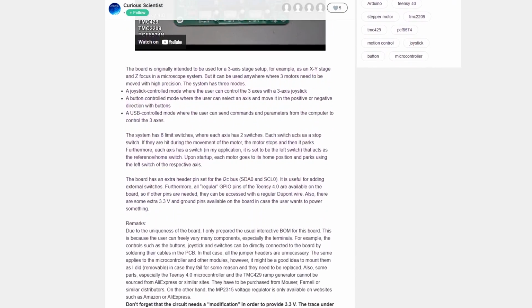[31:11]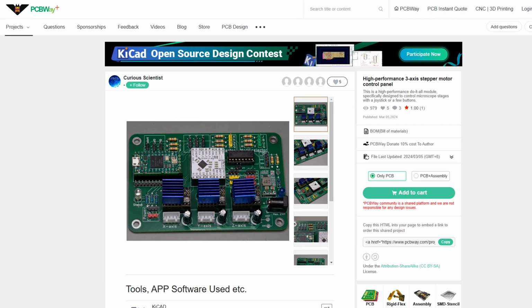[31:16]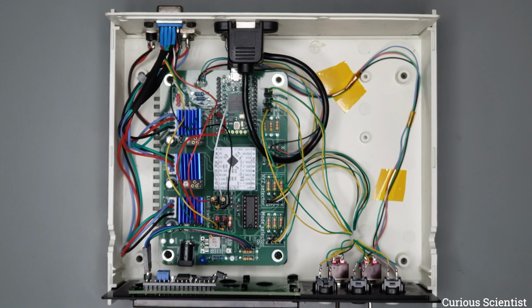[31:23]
So now I think this demo is finished here with the hardware. So let's take a look at a few microchips and stuff like that under the microscope, so I can explain how I move the stage and so on, so we can see how smoothly I can navigate and how that looks when it's recorded with a camera. So let's move back to the microscope.
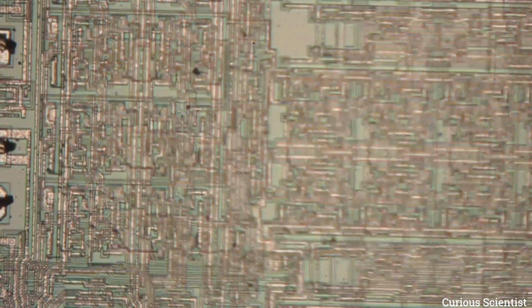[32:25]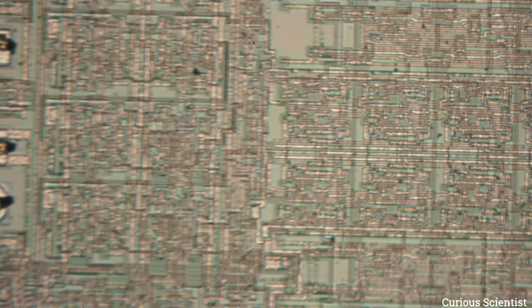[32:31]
So now I put a chip under the microscope and it's out of focus because the Z-axis is high. The system right now is in joystick mode, so I will just twist the joystick to bring the objective closer to the surface of the specimen, so we focus. And I try to move it slowly, so you will see as the object becomes more and more focused. And I went a bit beyond. There we go. So this is the surface of the chip.
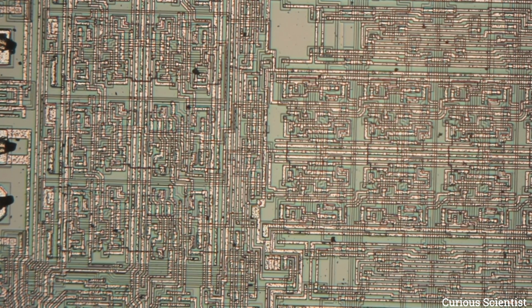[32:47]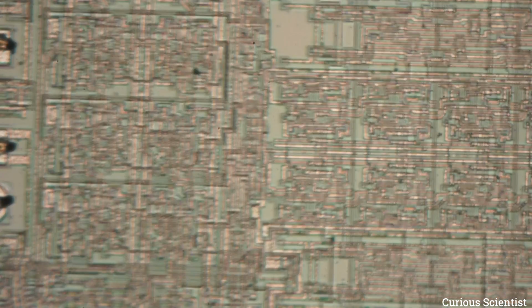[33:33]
So you could see that I could focus it more or less easily with the joystick. But actually I made the slow mode of the button exactly for this. So let me select that. So now I'm in button mode and hopefully the slowest mode is activated. And I'm moving on the Z-axis, so let's see how the system behaves. So we go out of focus. And now it's more or less focused. So you can see that with the button it's even easier. And I could set the button to an even slower speed when it's at the slowest setting. So then I could have it at a finer step size.
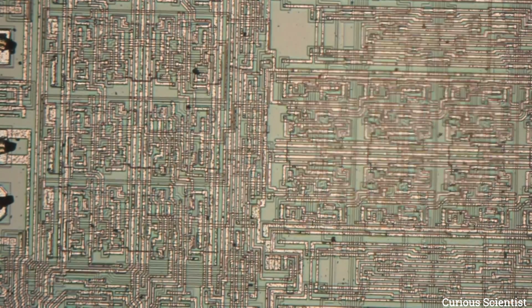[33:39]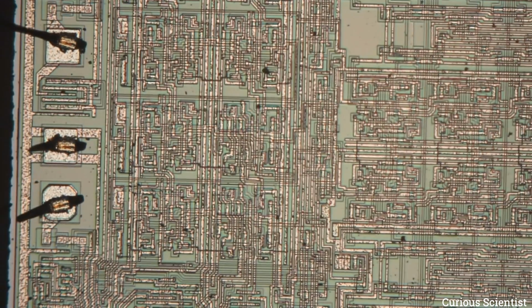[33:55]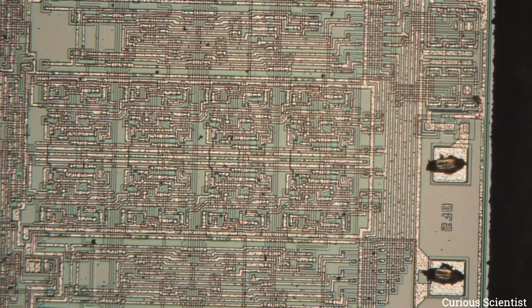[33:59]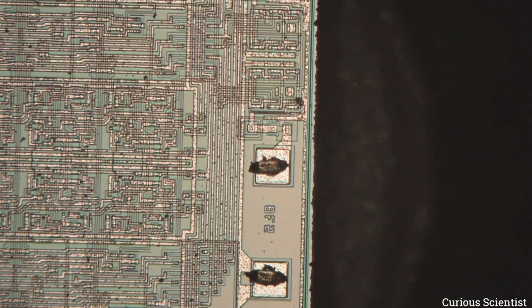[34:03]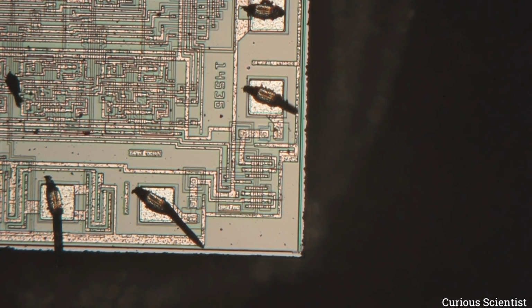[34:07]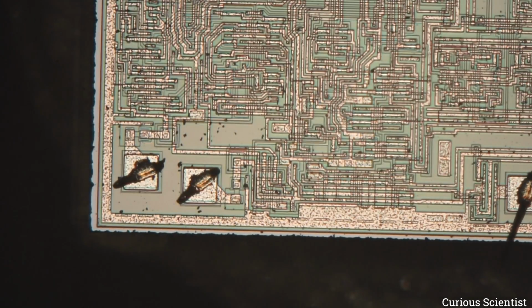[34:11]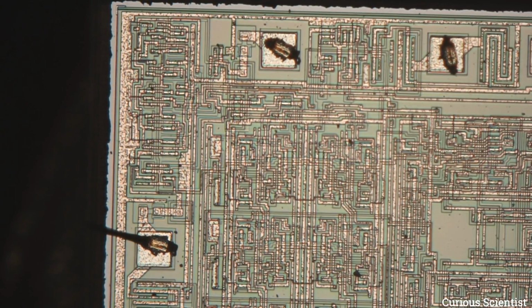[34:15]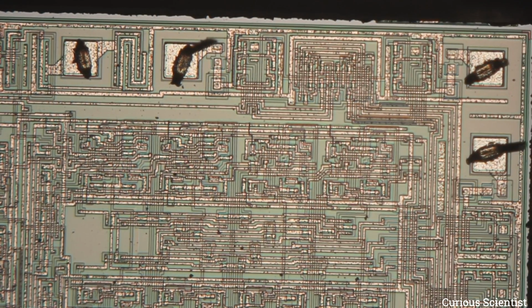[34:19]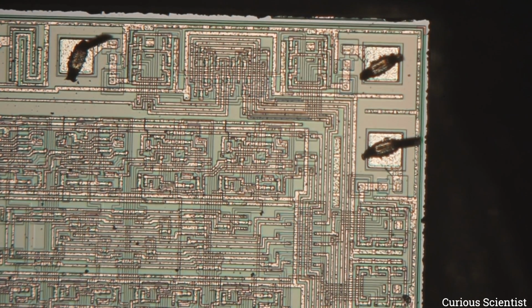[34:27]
So now I'm getting out of focus. And I'm approaching the focus again. So it's somewhere here. I go back to joystick mode. And I try to navigate on the X and Y axis. So this is a bit choppy, but it kind of works. So for rough navigation, I guess the joystick is enough, as you can see. It's also my hand or the mechanism on the joystick that it's just hard to keep it at one speed. So therefore it doesn't move well.
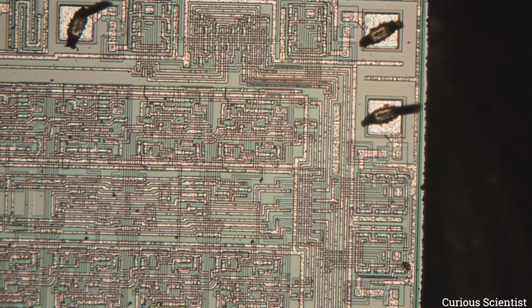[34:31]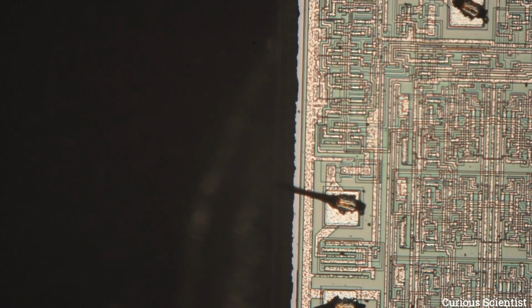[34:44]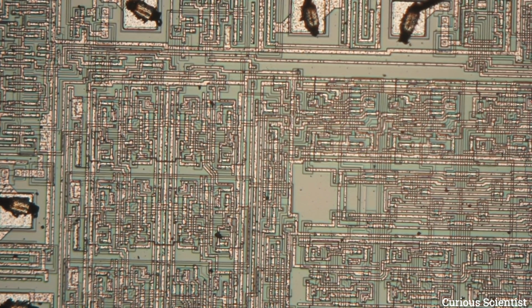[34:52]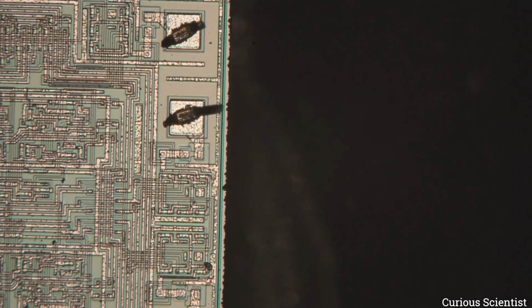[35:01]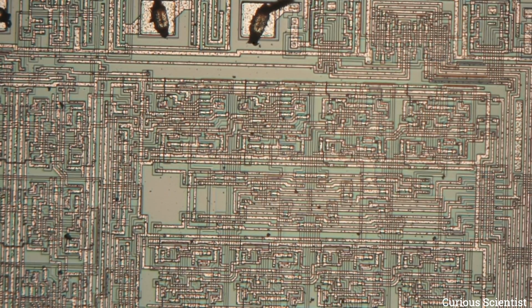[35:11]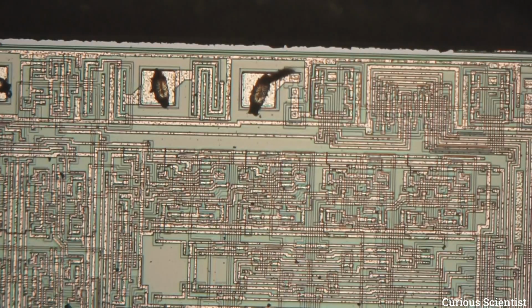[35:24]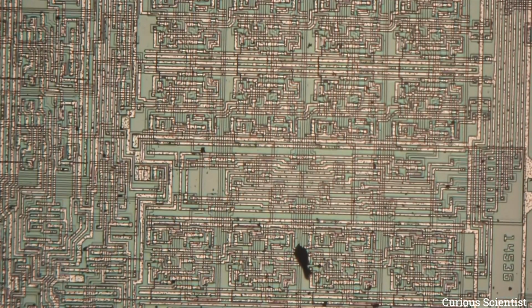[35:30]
But if I go to button mode and I go to the X-axis, then let's see what happens. That was a bit too fast. So I change the speed. Yes, this is way too fast even at the slowest setting. But this is just tuning it, nothing else. But you can see that it moves very smooth. It's just too fast. So I could not, let's say, record a panning video with this yet. But yeah, it takes me 2 minutes to reprogram this thing.
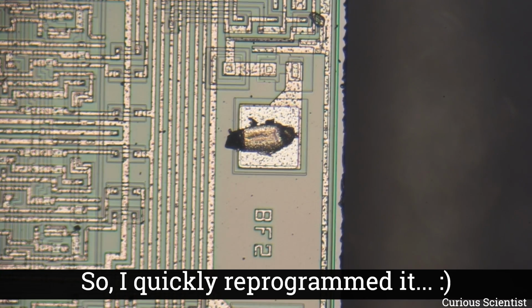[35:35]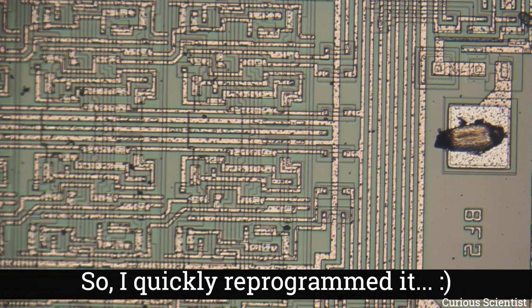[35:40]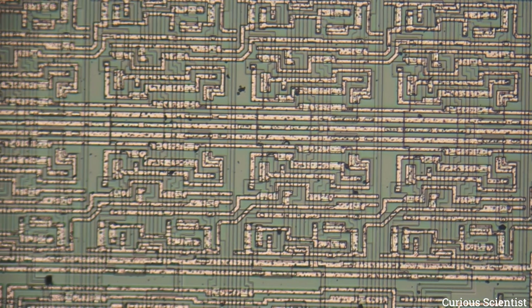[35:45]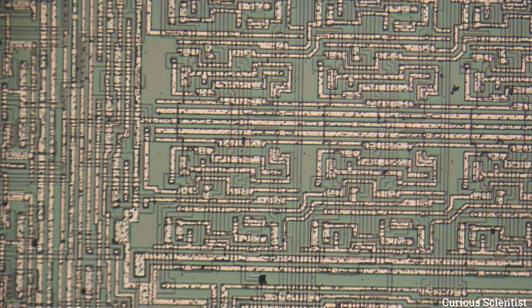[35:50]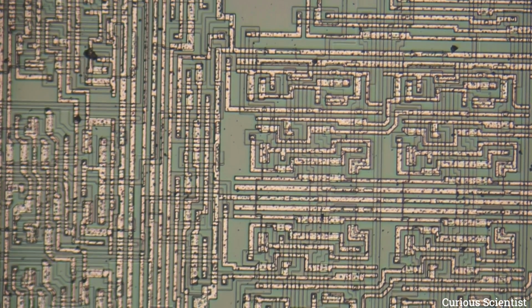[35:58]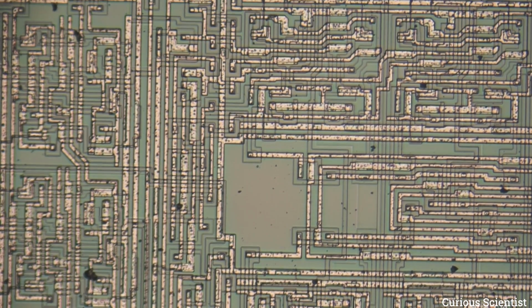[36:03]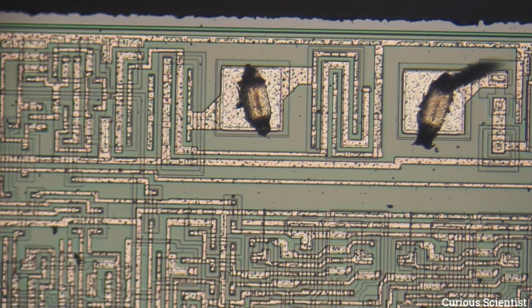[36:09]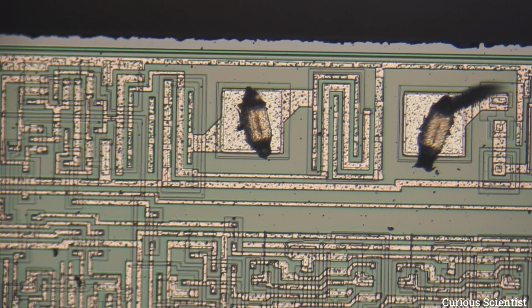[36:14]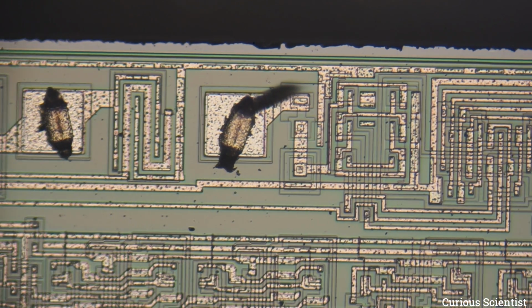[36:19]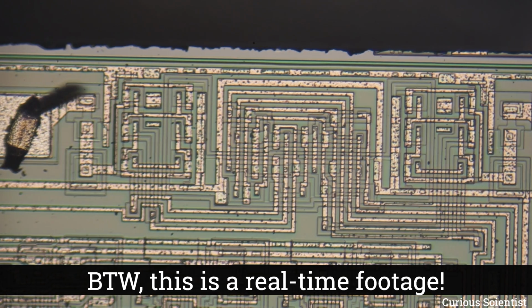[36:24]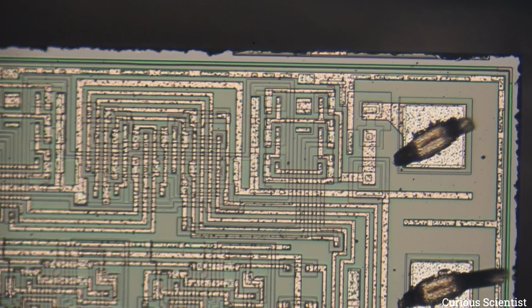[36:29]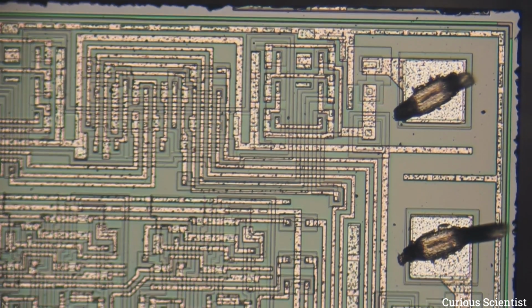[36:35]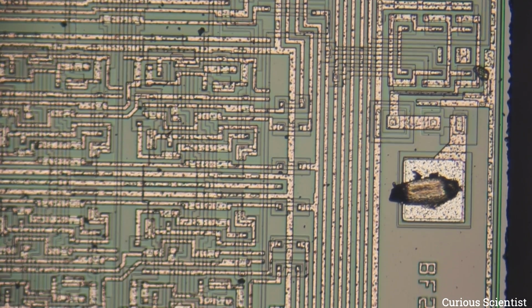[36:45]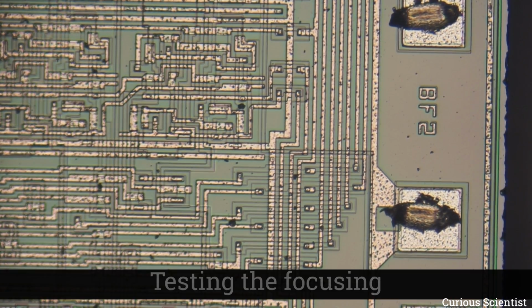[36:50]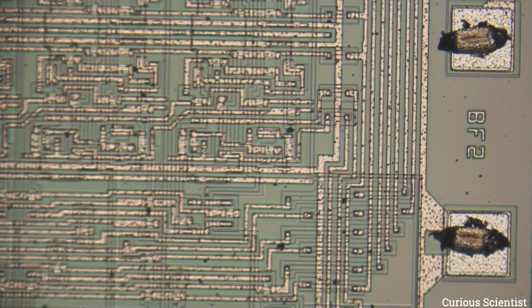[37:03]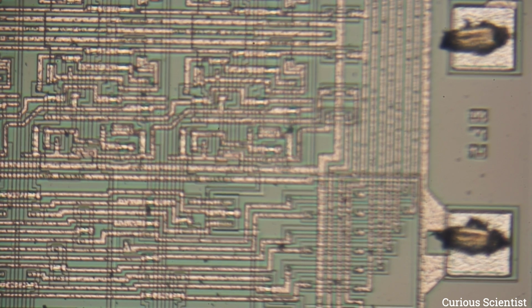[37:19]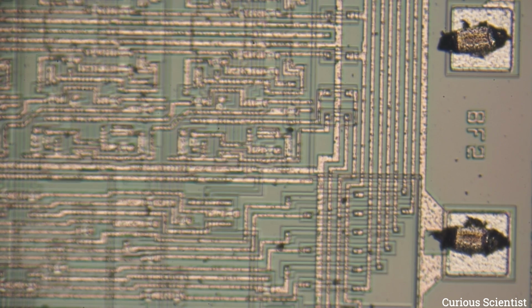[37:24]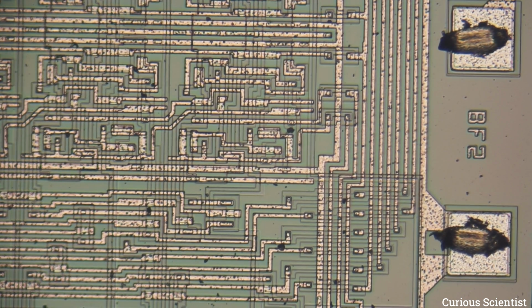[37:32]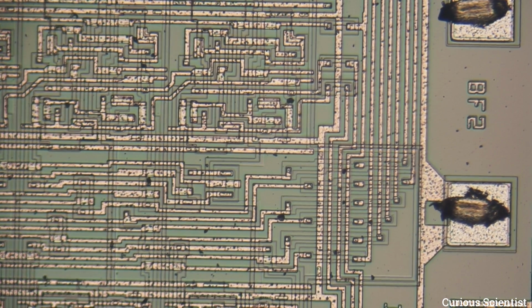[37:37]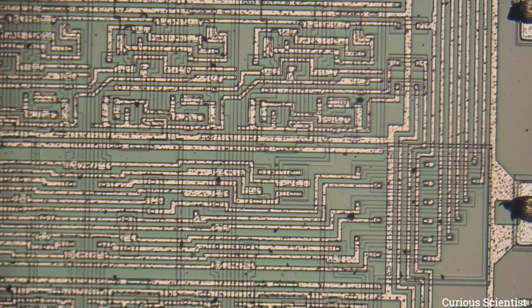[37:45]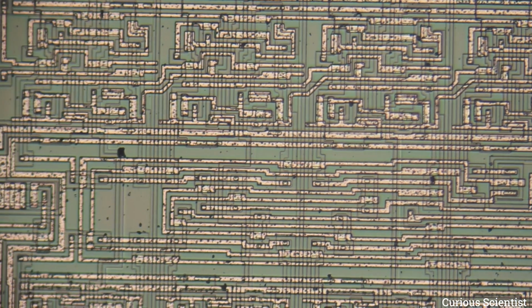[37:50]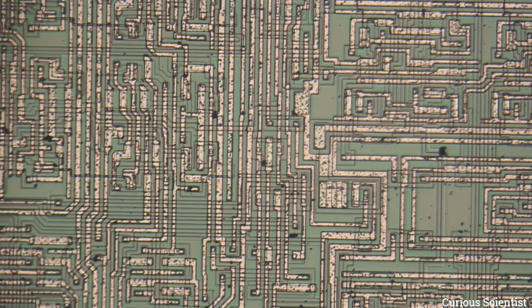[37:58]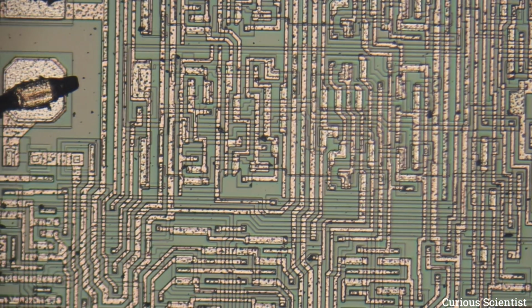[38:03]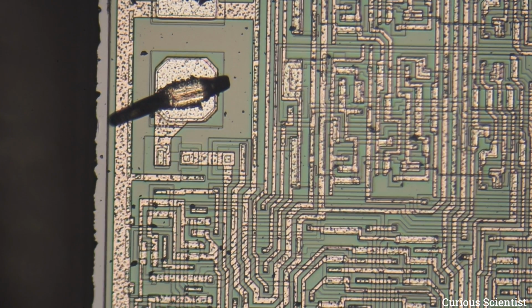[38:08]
So yeah, it works. So I'm satisfied with this, and all the features of the circuit and the software work fine. So I consider this project finished.
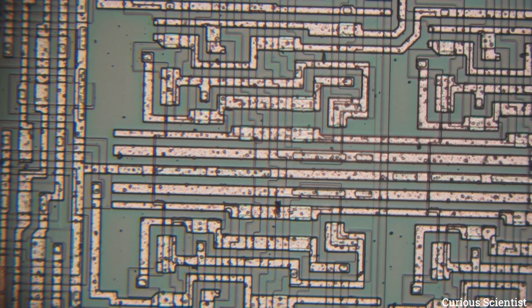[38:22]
And just as a side note, I haven't published this software that I'm using on the microcontroller, and I'm not planning to. Some people were complaining about this, but this is a lot of work and it's my own intellectual property, and I decide what I do with it. So if I don't want to publish it or put it on my Patreon, then it's my decision. So for example, if you purchase the PCB and you hope for software, or you become my supporter on Patreon and hope for software for this project, you will not find it. So keep this in mind. This project is more for showing my skills and knowledge and sharing ideas with you regarding this kind of topic.
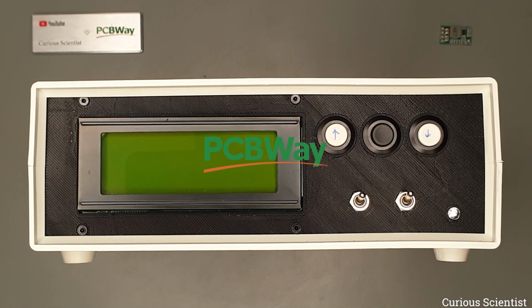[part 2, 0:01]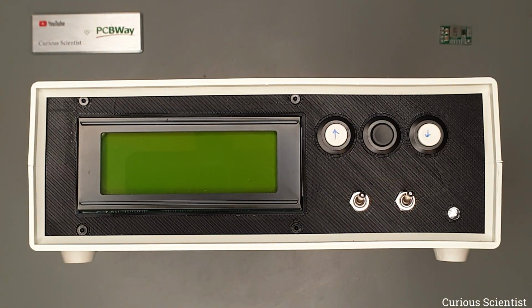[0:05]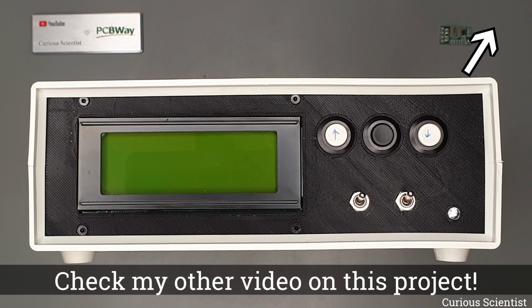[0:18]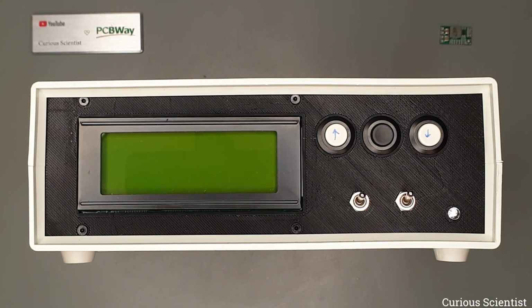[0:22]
Welcome everyone. In this video I show you a tiny yet very powerful modification for my triple axis stepper motor controller circuit. I have already shown this circuit before and I explained how I used it to automate my metallurgical microscope. So if you are interested, check the corresponding video.
The device is already 100% functional. As you can see it has a nice control panel and an enclosure as well. However, there is one little thing that I wanted to add, and it was not part of the original design, so I show it now if other people also want to do the same thing.
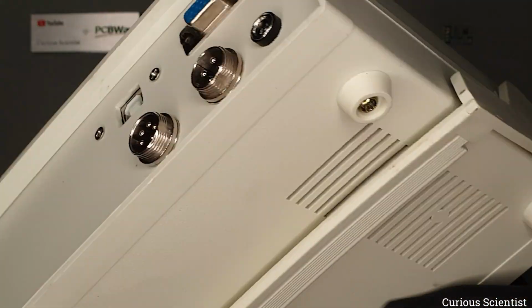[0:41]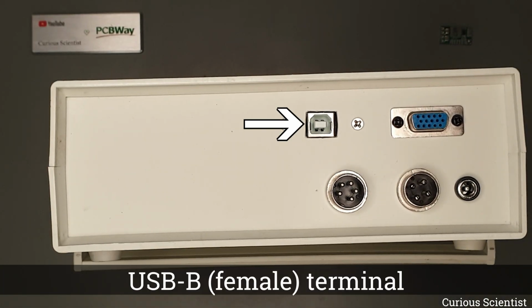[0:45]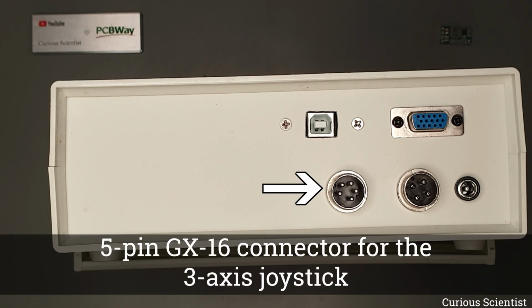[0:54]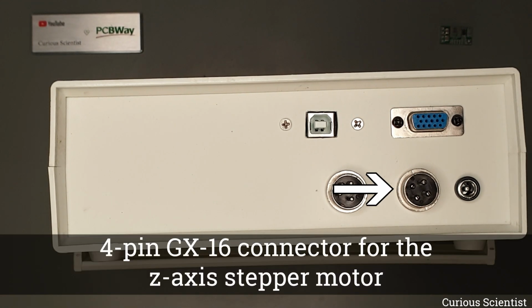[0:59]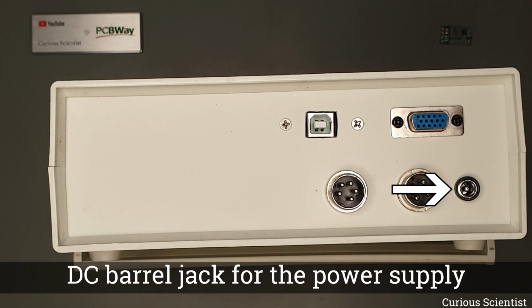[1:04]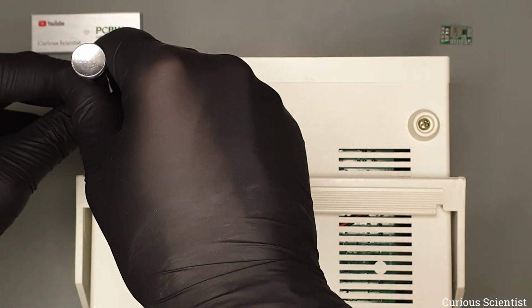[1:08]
Speaking of the control panel and the enclosure, the rear side of the enclosure has all the necessary connections. A USB connector, so I can control it from the computer. A D-sub connector, which connects the controller to the XY axis motors and the corresponding limit switches. A 5-pin GX16 connector for the joystick. A 4-pin GX16 connector for the Z-axis stepper motor, and a barrel jack connector for the external power supply. But let's look inside the enclosure so I can show you what I want to change.
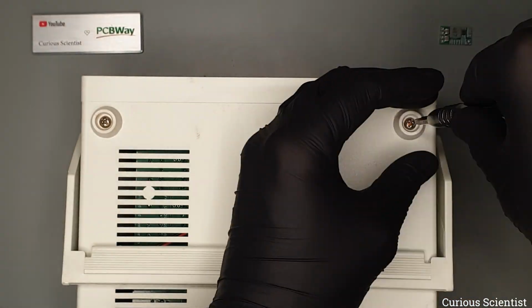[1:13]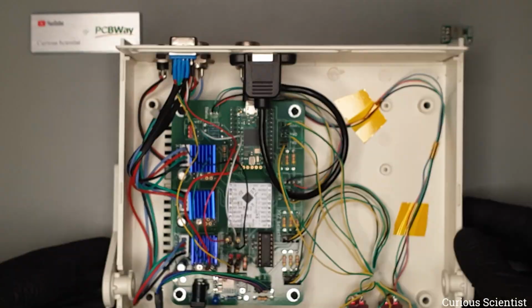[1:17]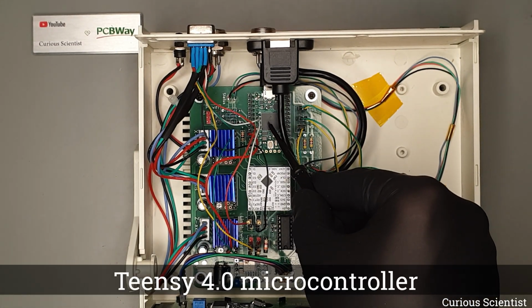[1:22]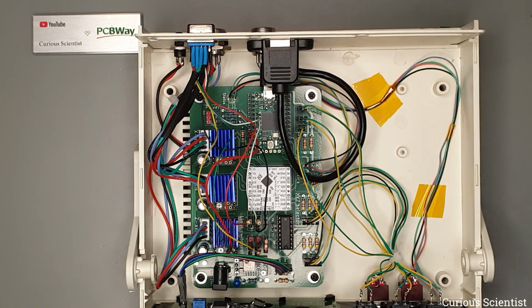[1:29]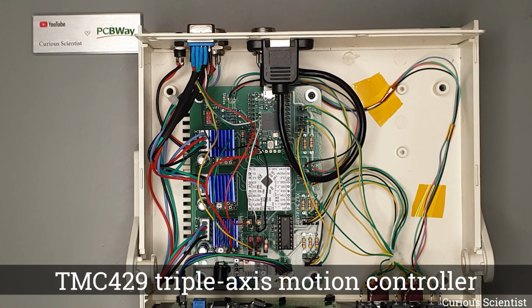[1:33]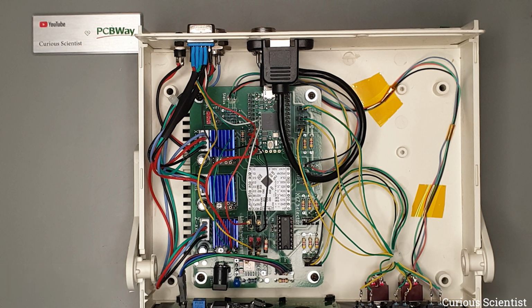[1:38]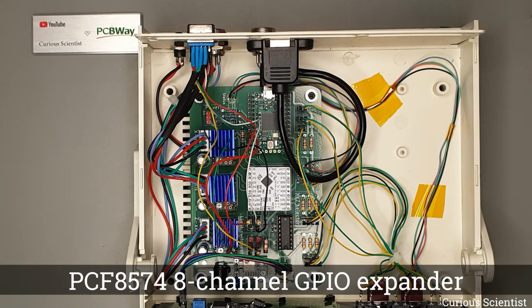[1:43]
Before moving on, allow me to quickly show the main components, in case you haven't seen the previous video on this project. The brain of the controller is a Teensy 4.0 microcontroller. It has a very powerful CPU, and it has enough peripherals and GPIO pins to take care of everything. Then the motors are taken care of by a TMC429 triple axis motion controller. It can handle 3 stepper motors and 6 limit switches simultaneously, and since it does all the computations, it offloads the microcontroller. Then we also have an 8-channel GPIO expander.
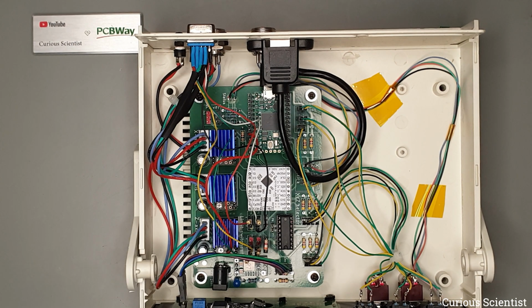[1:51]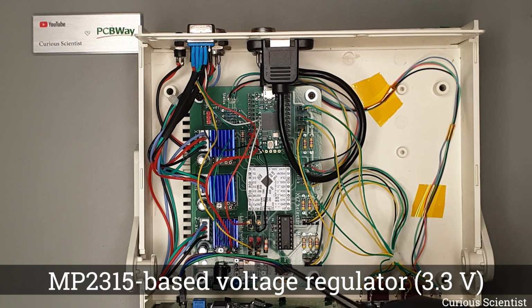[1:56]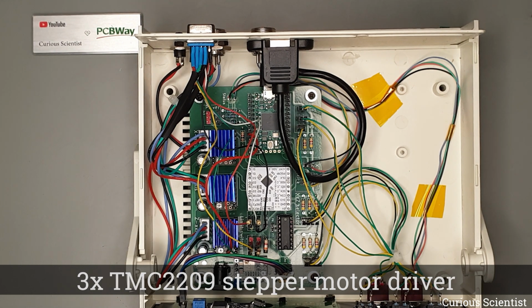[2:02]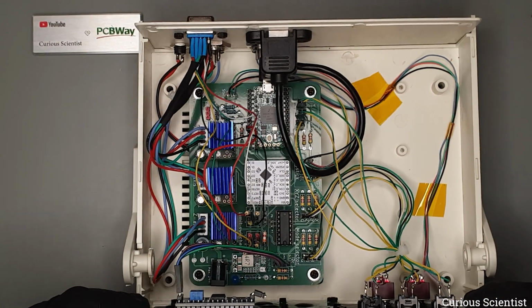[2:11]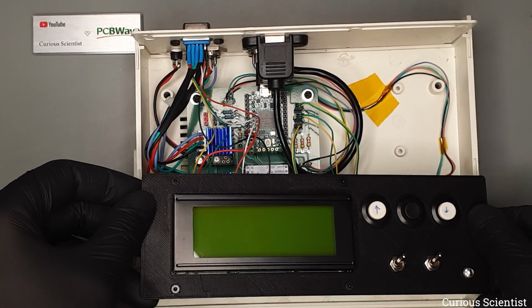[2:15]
It reads the 2 3-way switches on the front panel, and instead of wasting 6 GPIO ports, I just used 2 I2C pins from the microcontroller. Then there is an onboard voltage regulator. This powers all the components except the microcontroller. Then we also have 3 TMC2209 stepper motor drivers. They drive the 3 axes. Then the rest of the components are just a few buttons and switches, an RGB status LED and a display, and they are all embedded in the front panel.
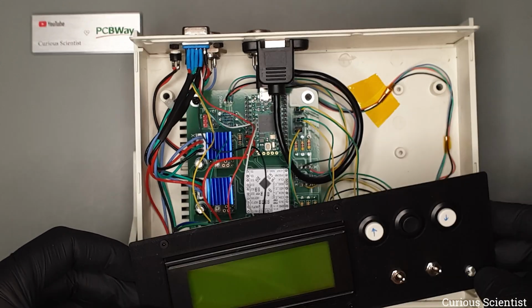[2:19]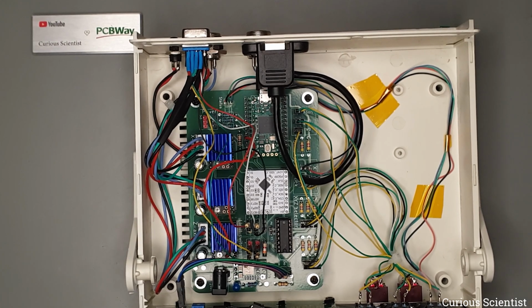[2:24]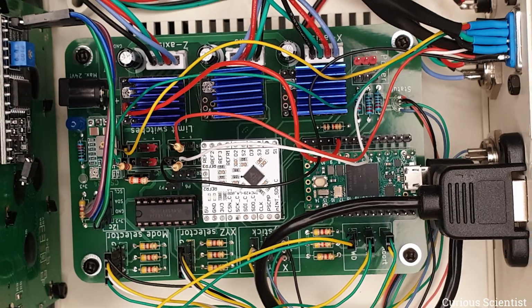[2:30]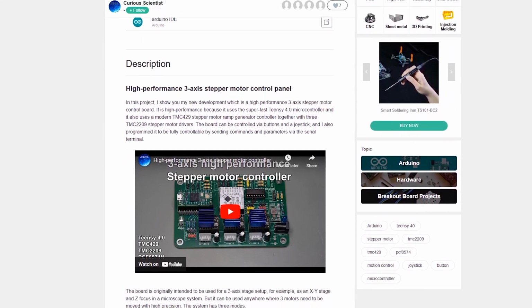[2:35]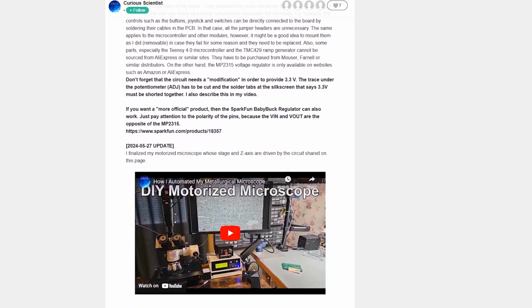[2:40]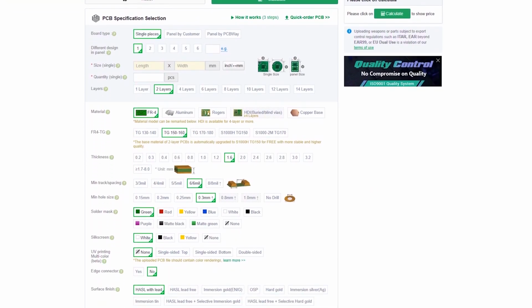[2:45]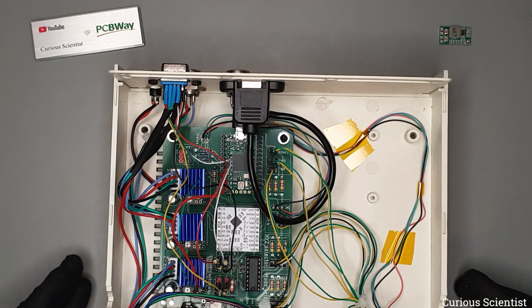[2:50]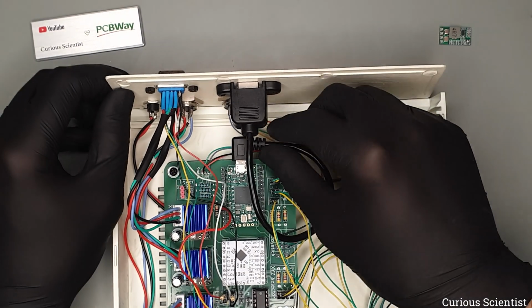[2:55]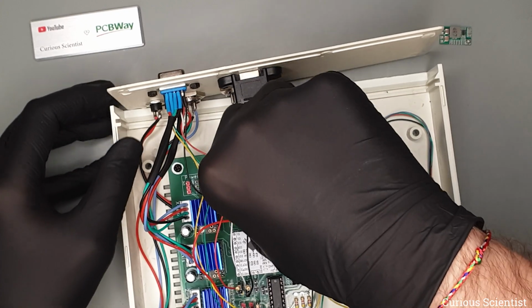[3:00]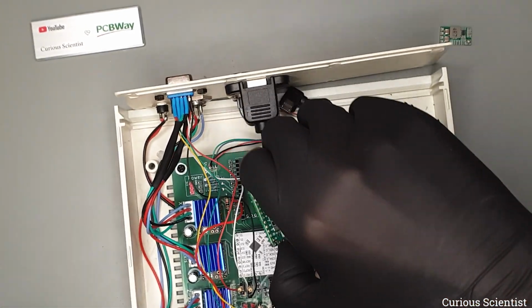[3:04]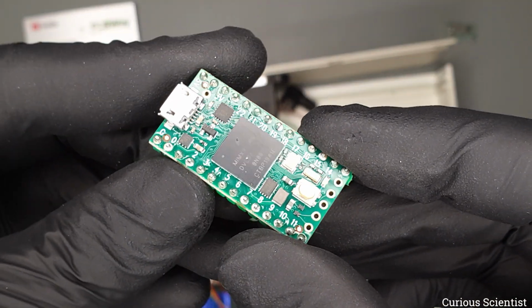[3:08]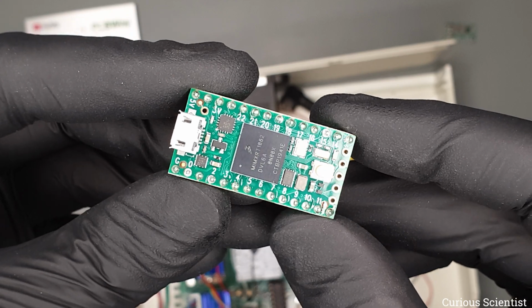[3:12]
So this modification will involve the main component of the board, which is the Teensy 4.0 microcontroller. Let me remove it from the board and let me show you what this is all about. Also, as a side note, let me mention that this mod is not specific to this circuit, but it is more specific to the microcontroller. So even if you don't use my circuit, but you work with this microcontroller, stay focused because the tips and tricks will be useful.
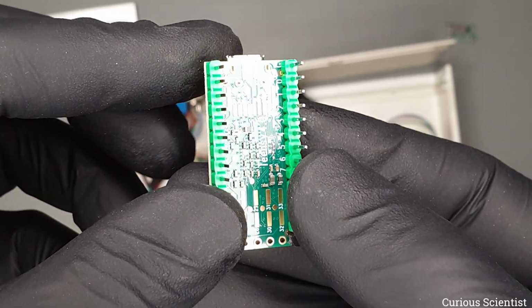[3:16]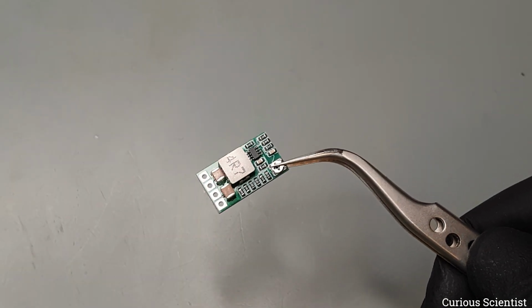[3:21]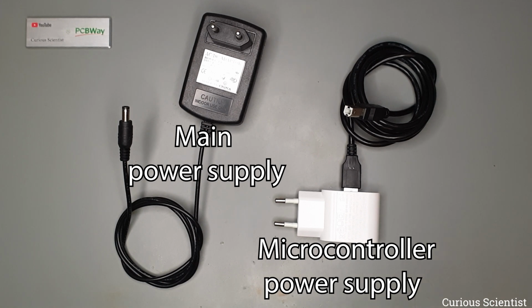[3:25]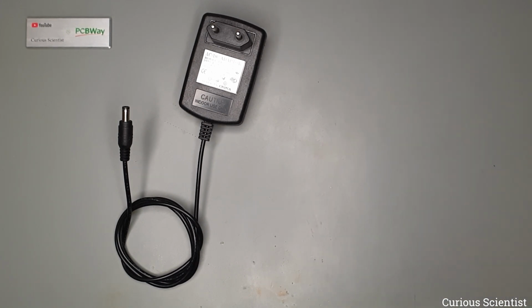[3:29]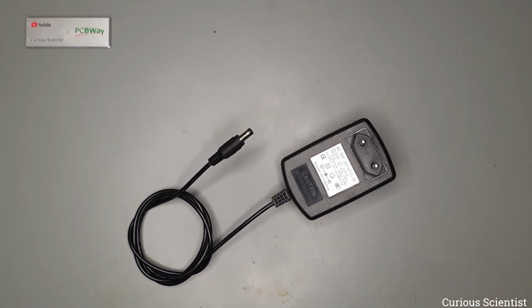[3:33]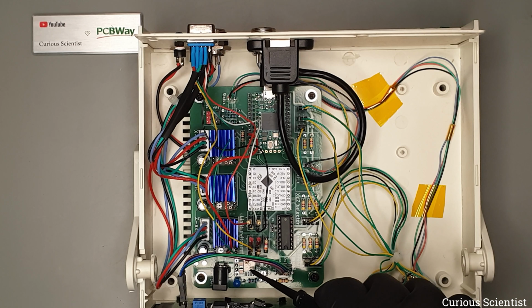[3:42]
What I'm trying to achieve here is to add another voltage regulator to the circuit that powers the microcontroller. So instead of relying on a plugged-in USB cable when operating the circuit in standalone mode, now everything will be powered from the external power supply that feeds the power into the DC barrel jack. But you might think, why is this guy struggling with another voltage regulator if the board already has a 3.3
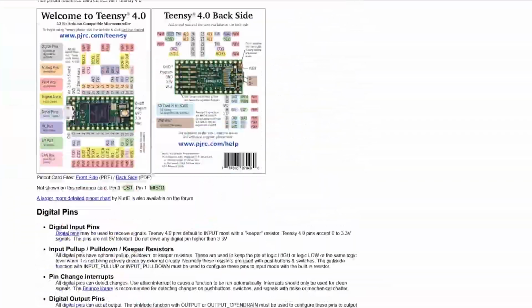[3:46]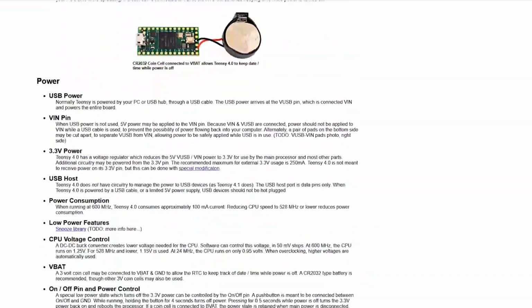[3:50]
volt source? Well, when we go to the official documentation of the Teensy board, it says that the board is not meant to be powered by its 3.3 volt pin. It can be done, yes, but it would require an invasive modification and I would rather not do it. However, one can use the V-in pin and feed it with 5 volts, which will then go through the onboard voltage regulator on the Teensy and everything will work well.
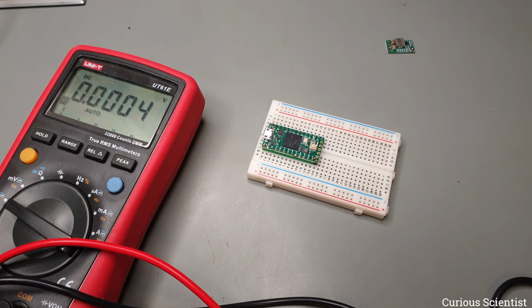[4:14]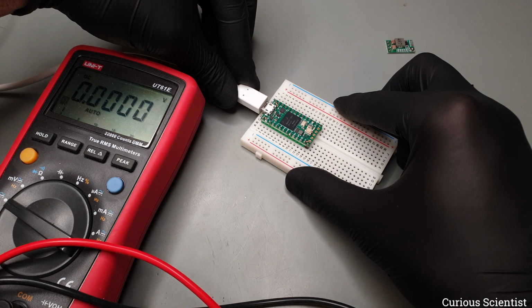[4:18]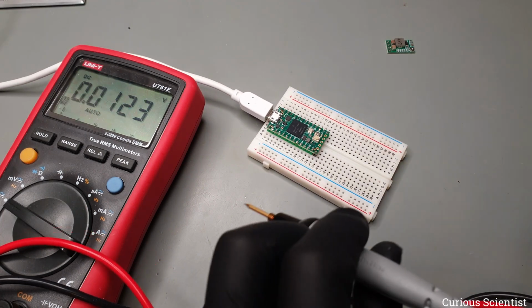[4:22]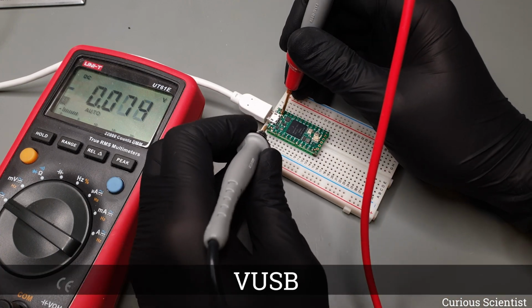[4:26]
But one thing still must be noted. The board's 5 volt pin is originally powered by the 5 volt which comes from the USB port. That means that in the original condition of the board, it is not possible to use the USB and power the board externally at the same time.
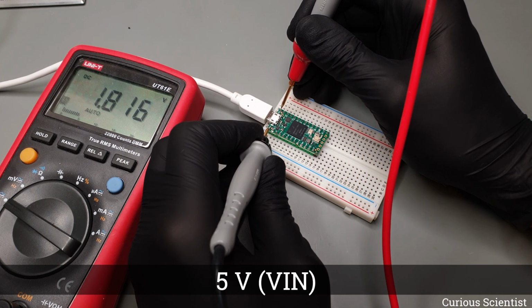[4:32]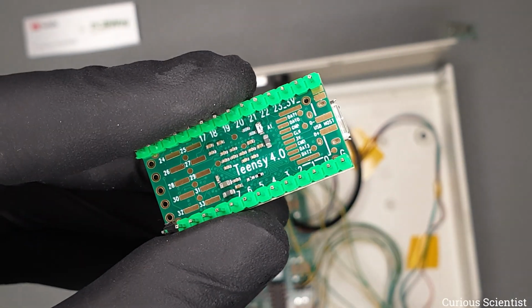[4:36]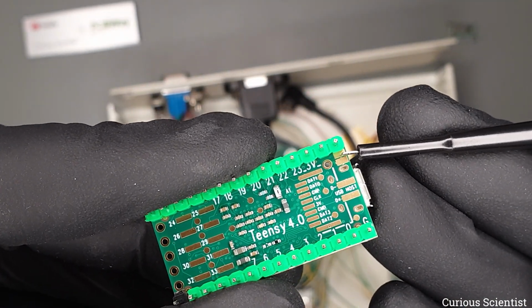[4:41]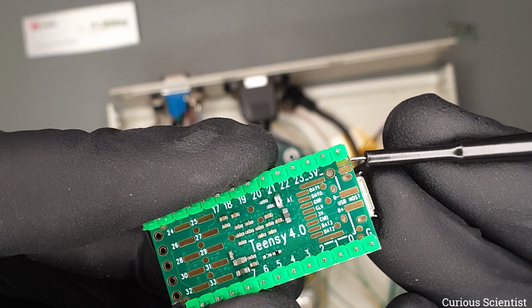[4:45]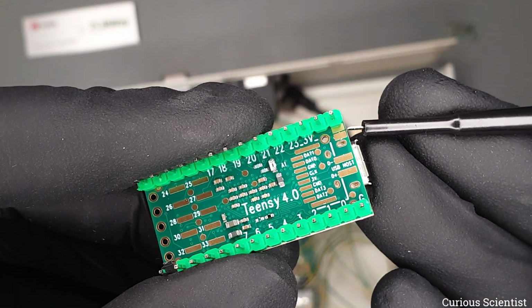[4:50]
However, the developer of the board thought about this, very smart. There is a small trace bridge on the bottom of the board that can be cut. And when we cut this trace, the 5 volt coming from the USB is not connected to the rest of the circuit anymore, and the board can be powered externally by 5 volt.
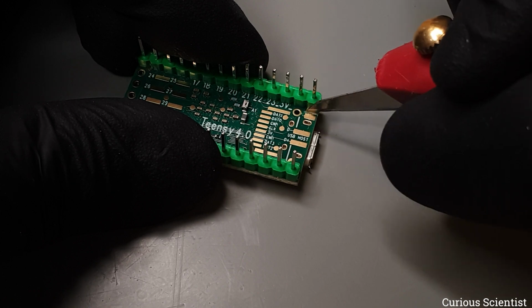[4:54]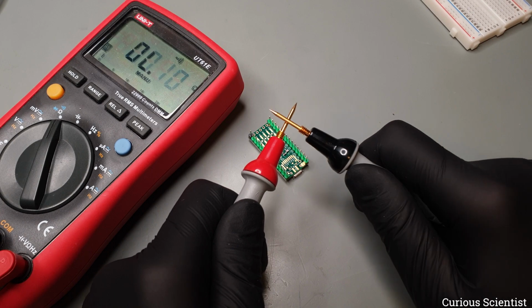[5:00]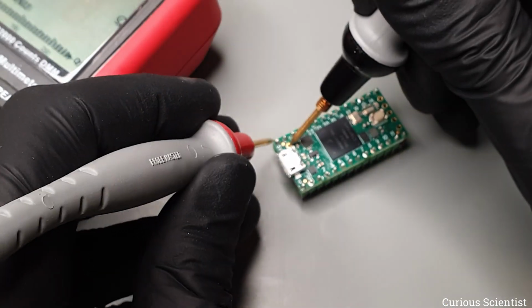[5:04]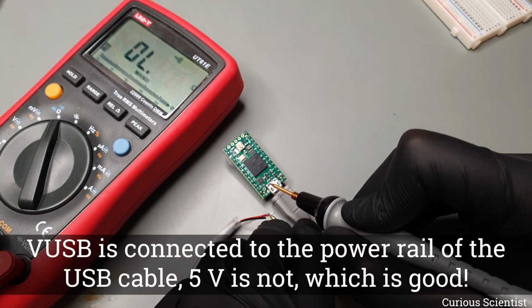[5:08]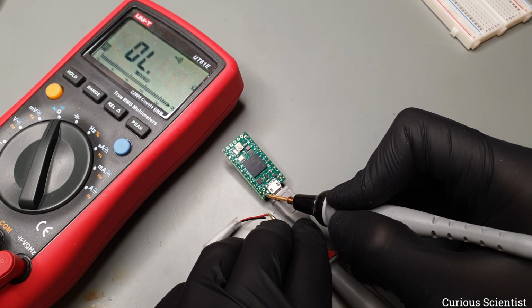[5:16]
So I did the same operation, and after cutting the trace, I double checked with the multimeter if the two different 5 volts are separated. It seems that the surgery was successful. But to be sure, I must triple check it. It is just too expensive to fry this microcontroller. So I just simply check if the VUSB shows up where it should not show up, or it stays where it should stay. And since everything is fine, now let's focus on the other voltage regulator.
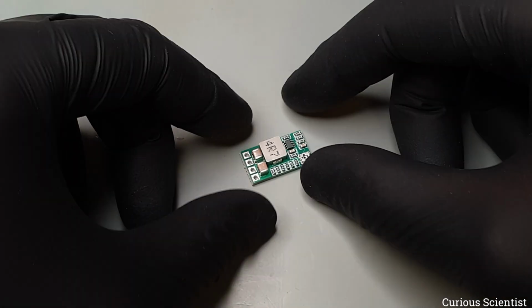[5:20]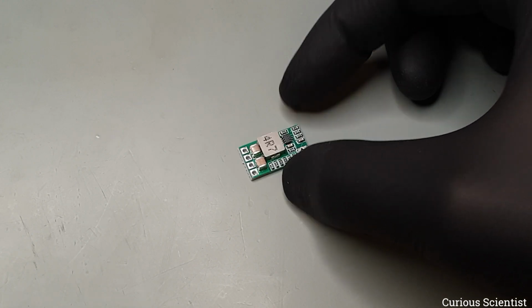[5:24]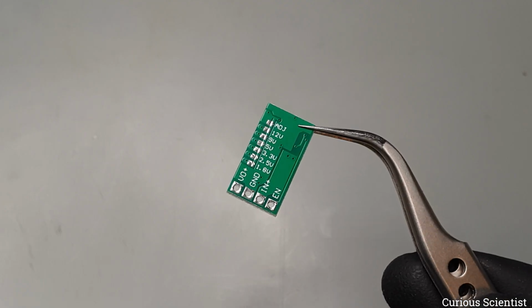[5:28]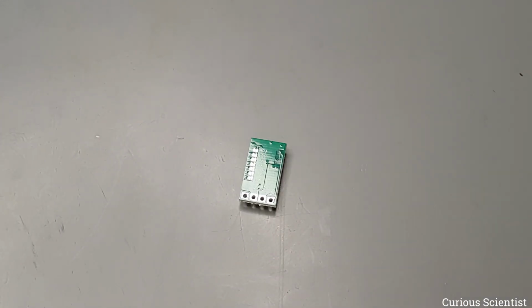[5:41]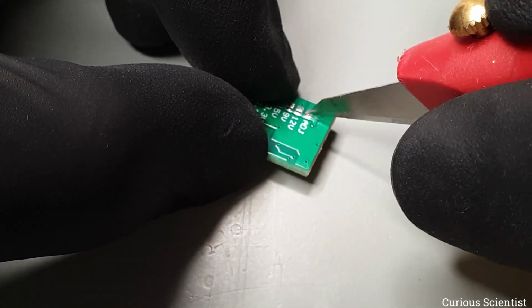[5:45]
I use the exact same regulator that I have already used on the board. It is tiny, cheap and rather powerful, so why not use it? This board also needs a little surgery, because in its original state the output voltage is adjusted via the onboard potentiometer. However, there are solder tabs on the bottom side of the PCB, and bridging one of them will make the board provide the desired output voltage. But this bridge is currently at the potentiometer, so I have to cut it. And then I can make the bridge with soldering.
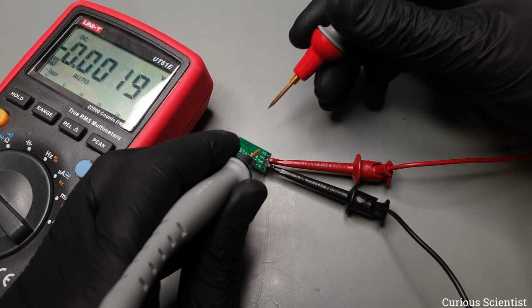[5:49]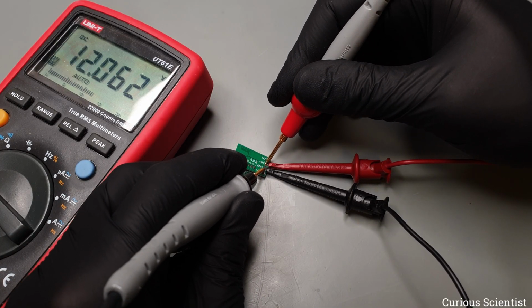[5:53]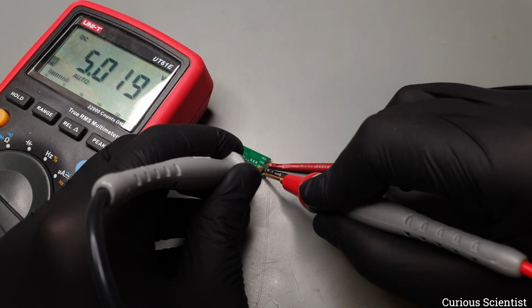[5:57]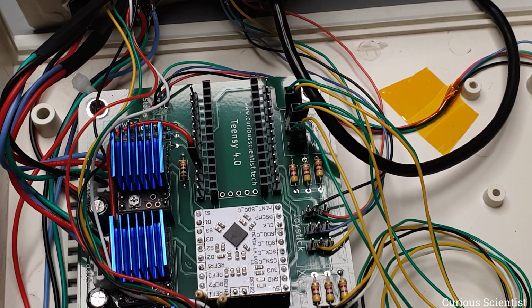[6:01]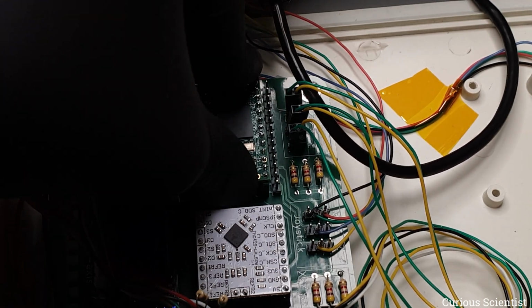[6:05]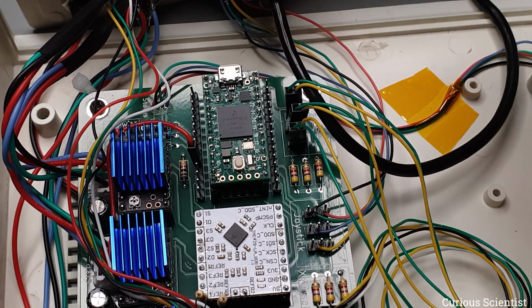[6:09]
Once again, I want to be sure that I made the job correctly, so let's feed 12 volts to the voltage regulator and then let's see the output voltage. And since everything seems to be good, let's proceed. So let's put the microcontroller back to the board. Luckily, I put a pin header along the microcontroller, so all pins are available externally. So this means that I can use the corresponding header pin and I can feed the 5 volt through this header pin to the microcontroller.
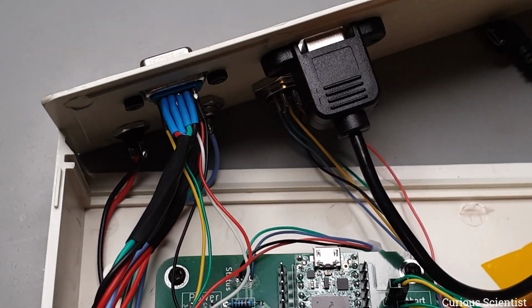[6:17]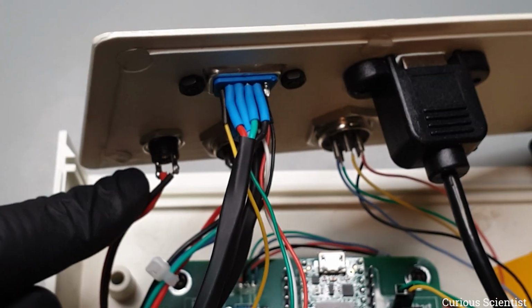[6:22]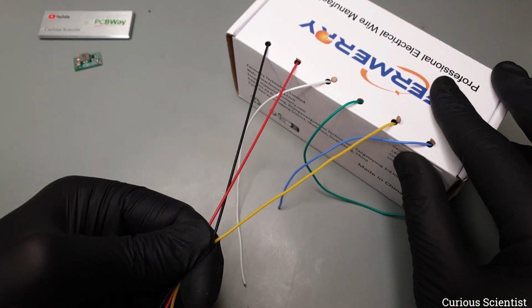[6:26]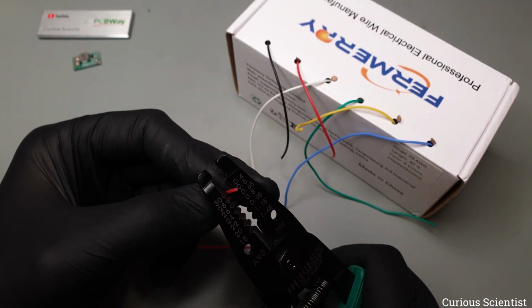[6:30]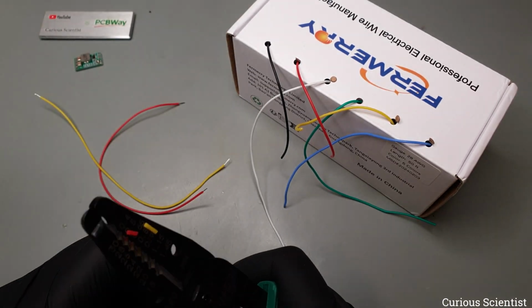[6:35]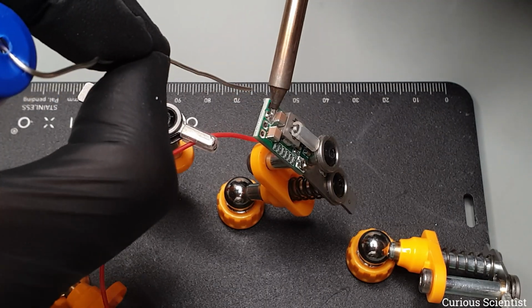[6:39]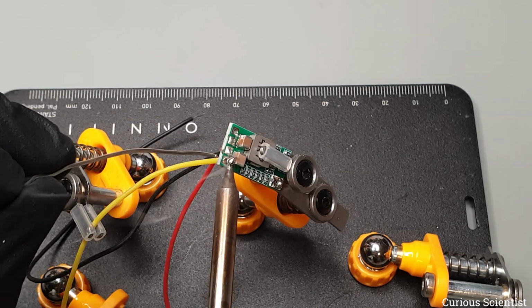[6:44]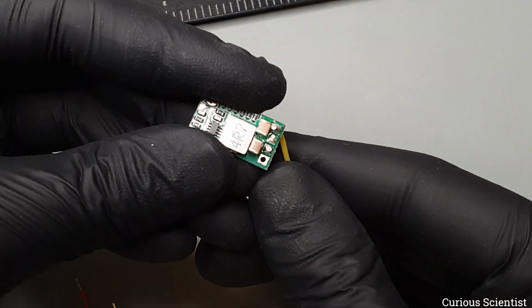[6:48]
And then I will just simply connect the input of the voltage regulator to the DC barrel jack at the rear panel of the enclosure. I will need some cables, so let's prepare them. Since the ground is shared across the whole circuit, I can connect the regulator's ground anywhere, so it will go on one of the already existing pin headers for ground. The 5 volt, as I said, will go to the pin header next to the microcontroller. So these two connections will have a Dupont connector, and the third connection on the voltage regulator, the V-in pin, will be directly soldered on the DC barrel jack's positive terminal.
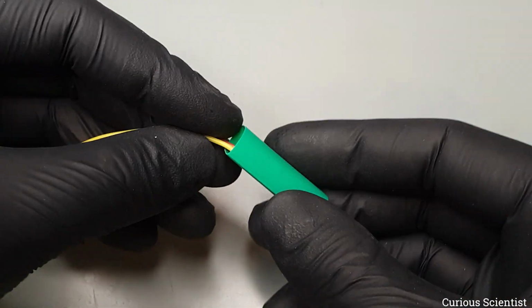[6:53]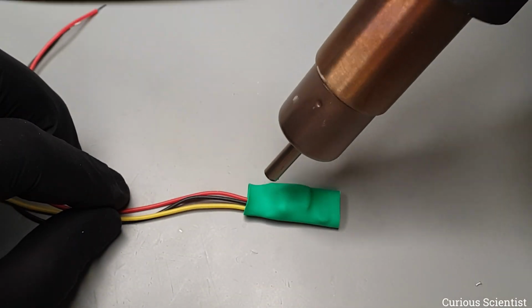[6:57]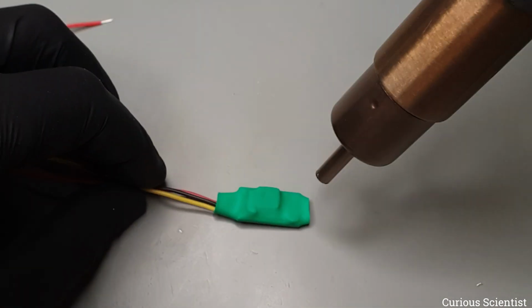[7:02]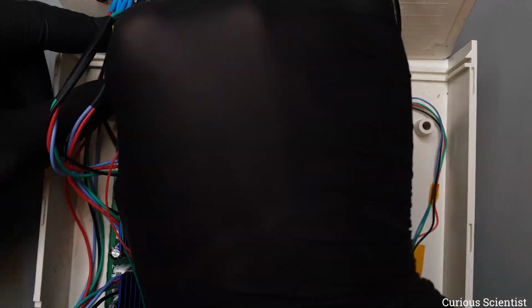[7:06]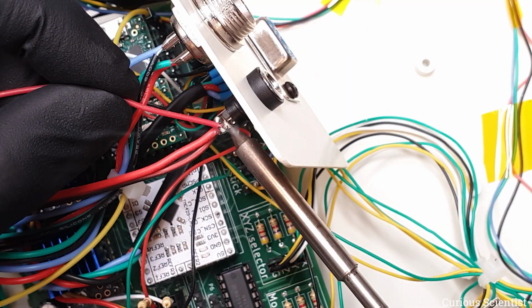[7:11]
To make the board a bit more safe, I wrapped it with heat shrink tube, because the board will sit loosely in the enclosure, so this heat shrink tube protects it and the rest of the circuit from accidental shorts and so on. So after wrapping the voltage regulator, I finish up the cables by crimping the connectors and soldering the V-in to the DC jack. And again, I'm careful, so I power up the device from a regulated power supply, so no high current could rush through the circuit if something is shorted or something like that.
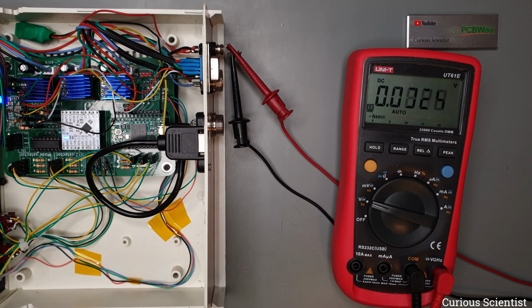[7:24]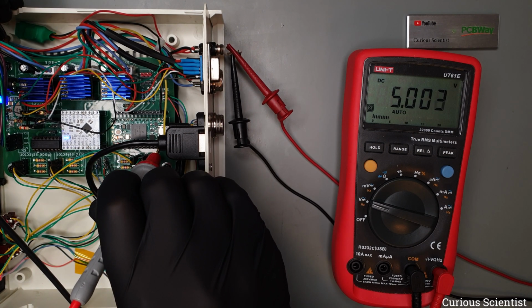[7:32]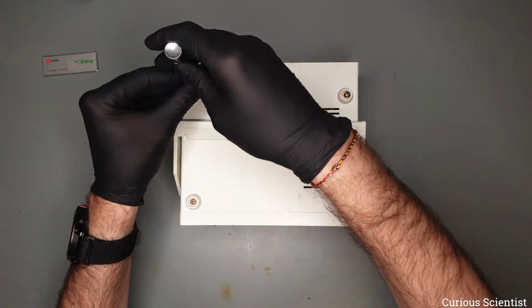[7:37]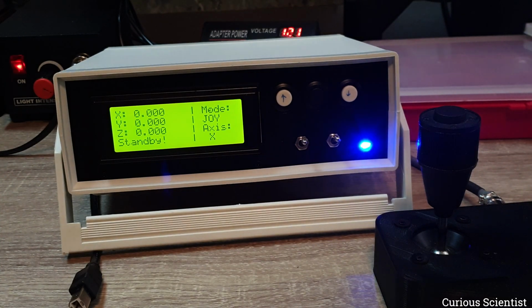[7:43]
And as you can see, or cannot see, no smoke is emerging, which is a good sign, and all the LEDs are lit up, which is also a good sign. When I check the 5 volt rail, it shows the correct voltage as well. So let's pack everything up and test the device in a real environment. As you can see, the device boots up as it should. And if I move around the joystick, the stage moves properly and everything works correctly.
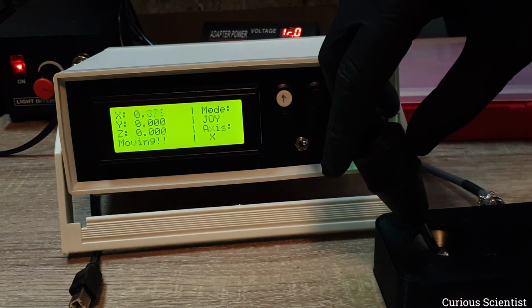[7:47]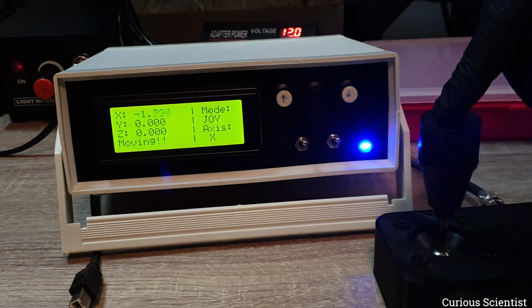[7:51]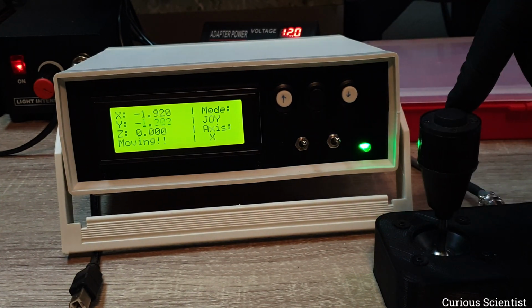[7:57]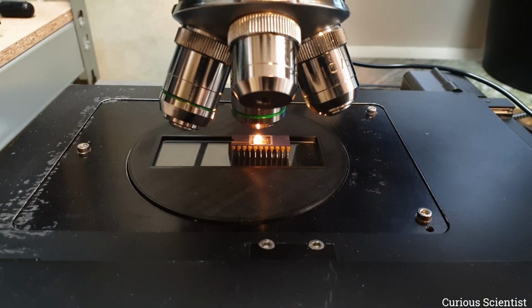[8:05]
I also put the USB cable in the picture, just as an indication that the microcontroller is no longer powered by an additional power supply, but now everything is powered through the DC barrel jack by an external power supply. So this is it. This is now the fully self-sufficient triple axis stepper motor controller device.
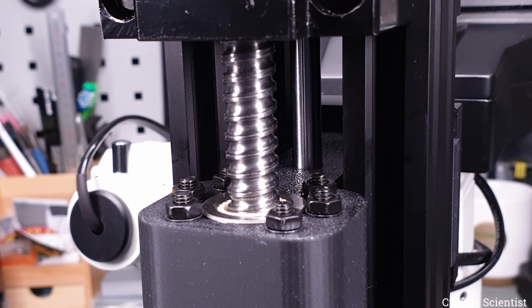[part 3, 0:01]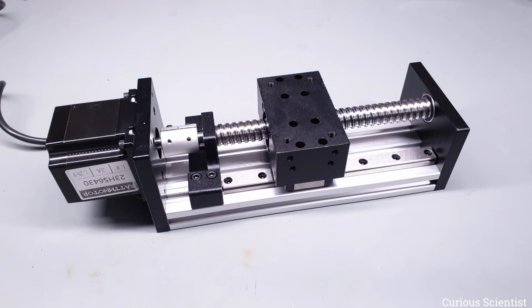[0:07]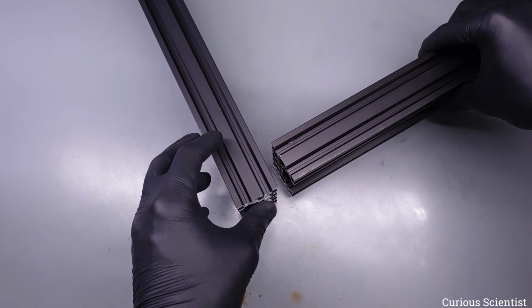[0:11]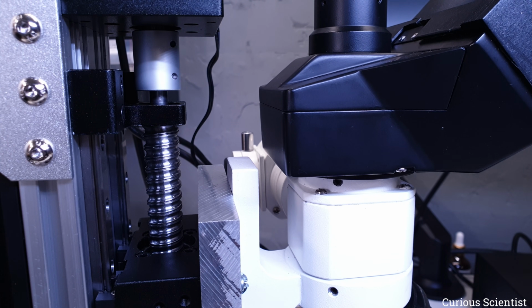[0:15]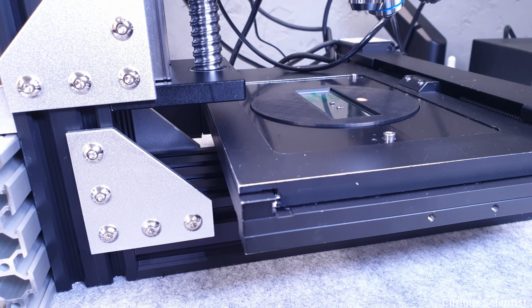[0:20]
So as I previously hinted, I wanted to further improve the microscope because I experienced excess vibrations and a lack of stiffness. When I published the previous work, I had already ordered the new parts that are used in this final upgrade. Finally, I achieved a rock-solid microscope with all 3 of its axes motorized and able to achieve a 1 micrometer step size. With the new Z-axis linear actuator and frame, the hardware is considered finished.
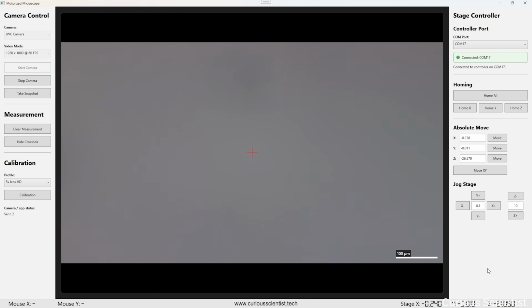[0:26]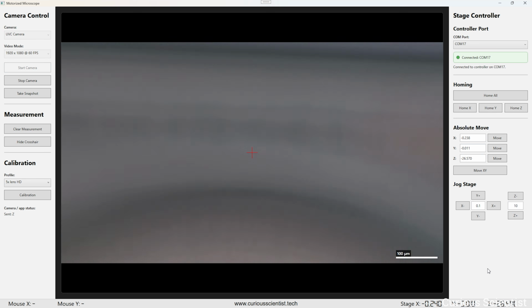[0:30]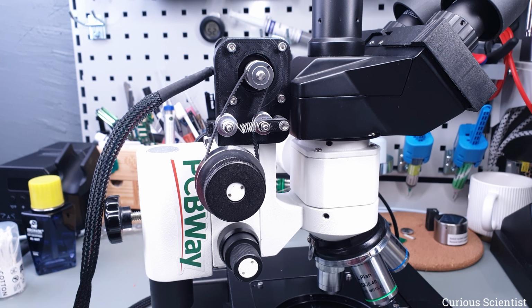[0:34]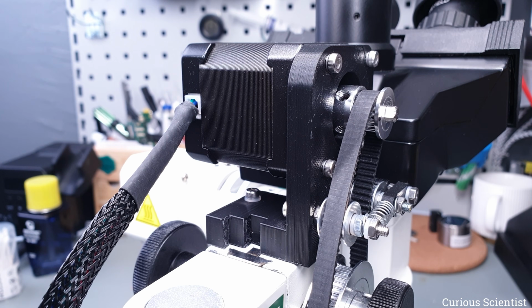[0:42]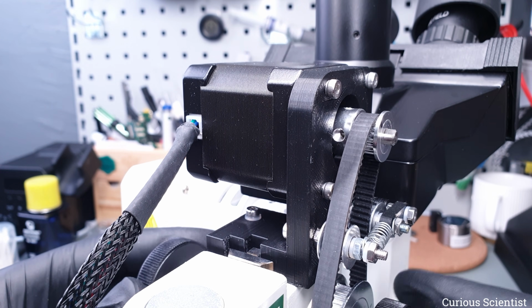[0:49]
I'm happy with all the moving parts of the microscope now, and if there are future updates, they will be focused on software-related updates. The previous Z-axis upgrade replaced the microscope's original Z-axis. It was a rack and pinion mechanism driven by the focus adjusting knob for coarse adjustments. I used this knob, attached a timing pulley to it, and drove it with a stepper motor via a timing belt. It was okay, but the speed and accuracy were not the best, and there was a noticeable backlash.
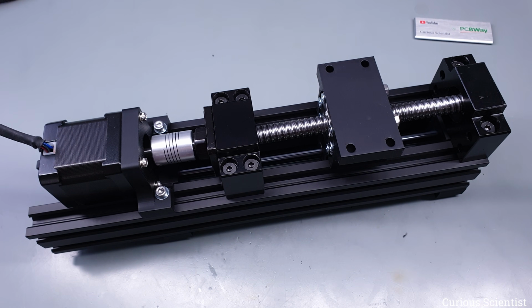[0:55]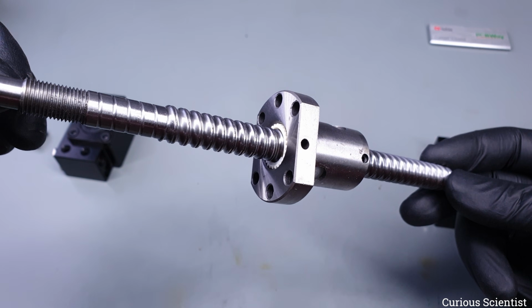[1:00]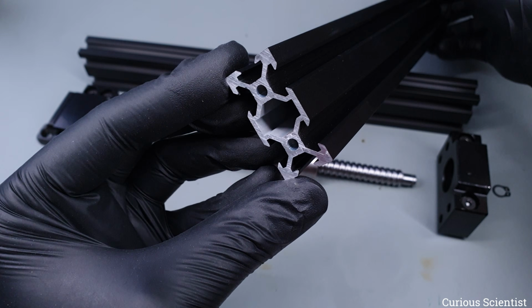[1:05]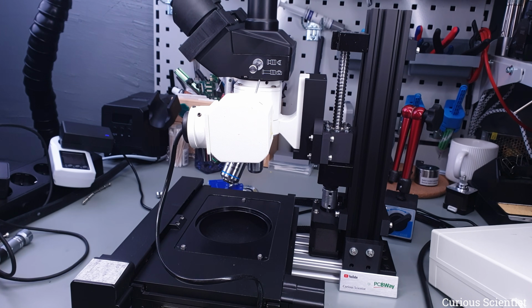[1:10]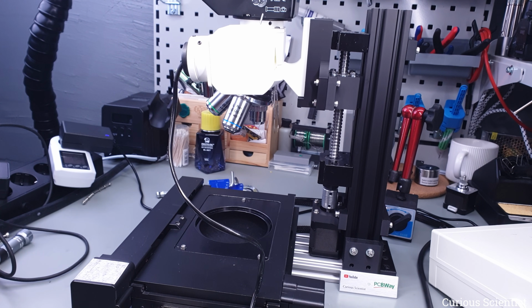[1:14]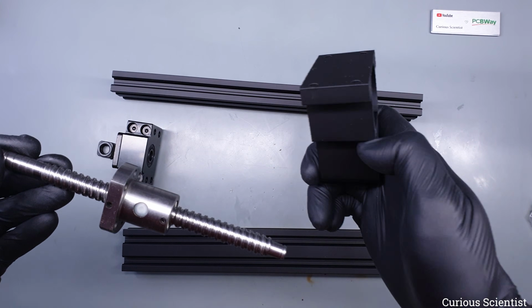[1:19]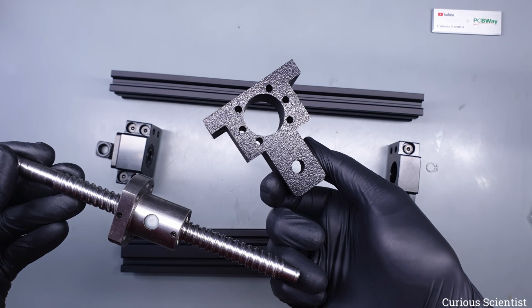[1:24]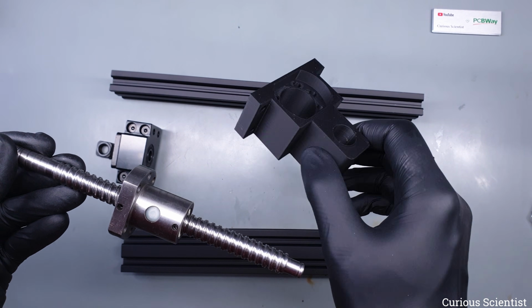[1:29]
Then, I replaced this mechanism with a custom-built linear actuator based on an SFU 1204 ball screw. I used some support bearings, some 2040 extrusion profiles, an 8mm shaft, and some 3D printed parts to build it. It worked better in terms of speed and accuracy than the previous mechanism, but I basically traded off stability. I noticed wobbly movement and excess vibrations. This most probably came from the not too stiff 3D printed parts, especially the one that supported the microscope, which, without the camera and cables, weighed 2.37 kilograms.
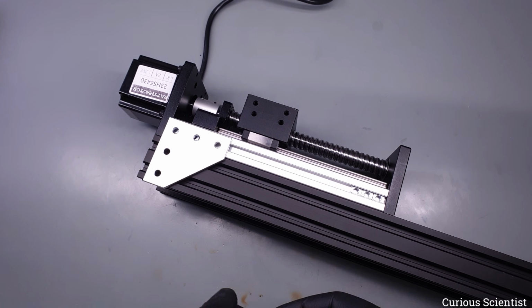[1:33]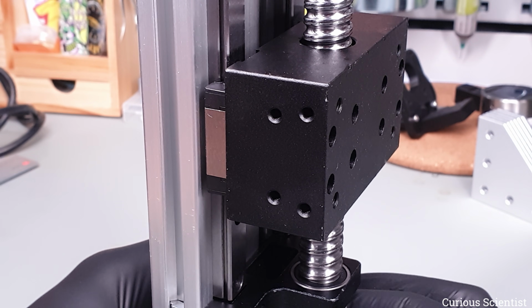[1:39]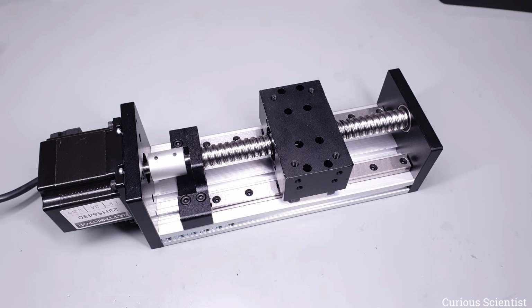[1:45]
Since I wasn't entirely satisfied with the DIY build, I decided that I was going to rebuild the Z-axis with better, stiffer parts. I reimagined the mechanism using similar but better built parts. The main idea, driving the microscope with a ball screw, remained. I found a nice linear actuator with a 100mm stroke length that seemed promising. It had a NEMA 23 stepper motor, which is a bit stronger than the NEMA 17 I used previously, but it is still possible to drive it with the TMC 2209 driver.
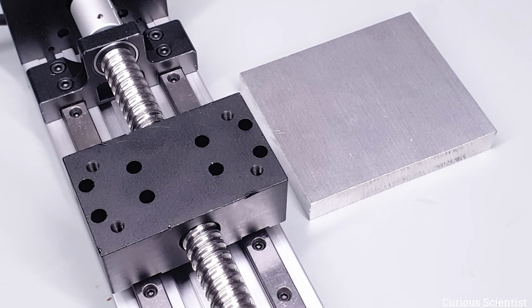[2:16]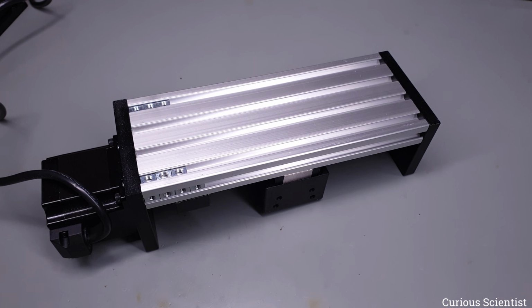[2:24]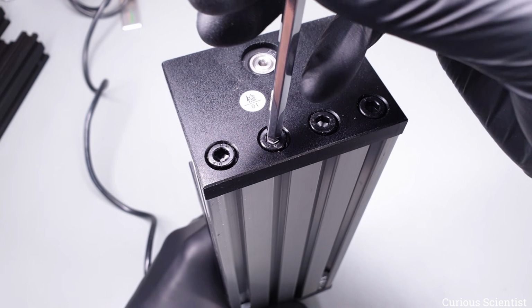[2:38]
It had an SFU 1605 ball screw, a step larger than the previous one. This is actually a bit bad, because its pitch is 1mm larger, 5mm, so I lose some resolution, but with the available microstepping, it does not really matter. It had 2 MGN12 type linear guides that supported the aluminum block that accommodates the ball nut, and everything was mounted on a 2080 extrusion profile, which made mounting and assembly easier. The linear actuator came with some pre-installed nuts for the V-slot, but I had to replace them because I needed more of them and in a different slot from where they were. I just had to unscrew the 4 bolts at the end of the actuator and remove and replace them.
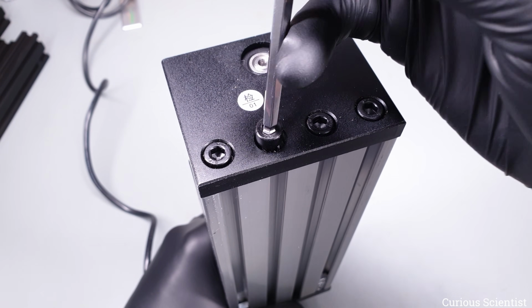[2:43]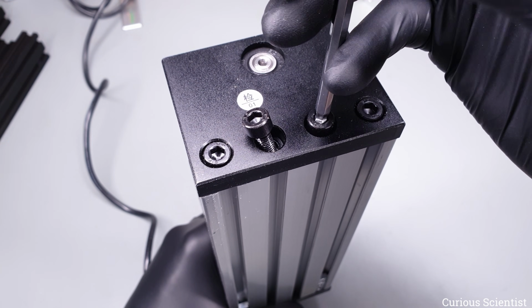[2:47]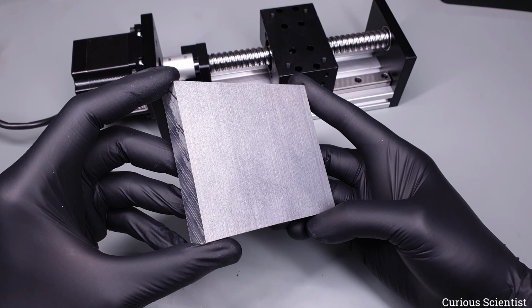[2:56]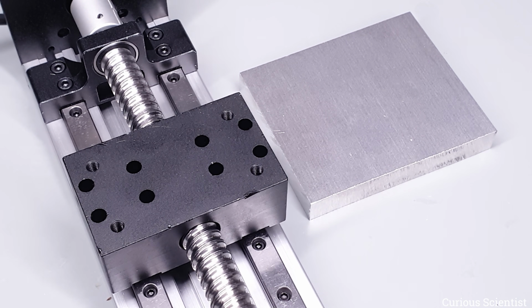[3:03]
Since the previous build suffered from vibrations, I decided to make the microscope mount as sturdy as possible. I bought a 15mm thick aluminum plate for this purpose. Having it this thick is not only because I want it to be sturdy, but I also want to provide a sufficient overhang so I don't have the same problem with the Y-axis as I had before. The plate will sit on top of the actuator's ball nut block and will support the microscope. The aluminum block for the ball nut has 4 M5 threaded holes. Plus, I will need 3 M4 holes for mounting the microscope.
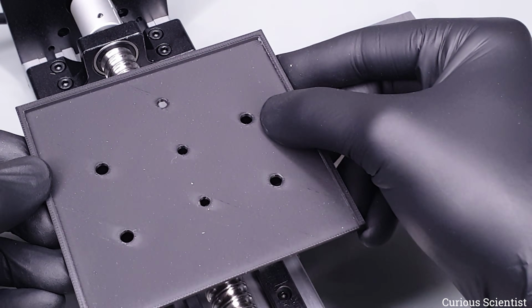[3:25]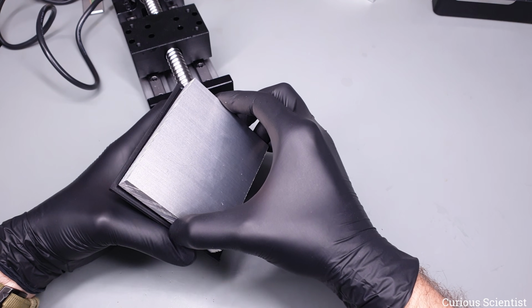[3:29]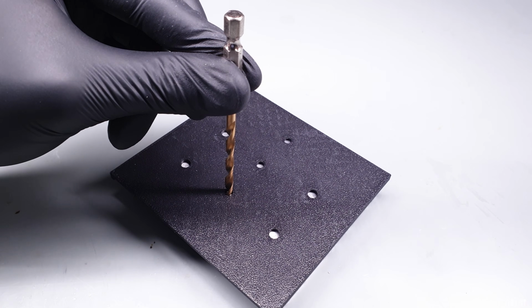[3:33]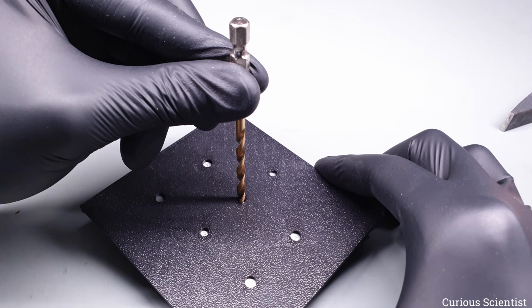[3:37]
The distances and tolerances are rather strict, and I'm not the best machinist in town. But I had everything drawn in Fusion 360, so I drew a sheet that contained the 7 holes I needed to drill. I made the 3D printed template so that it tightly snaps on the aluminum block. Once the sheet was on the plate, I took the drill bits, the 4mm and 5mm ones, and marked where the holes should be drilled.
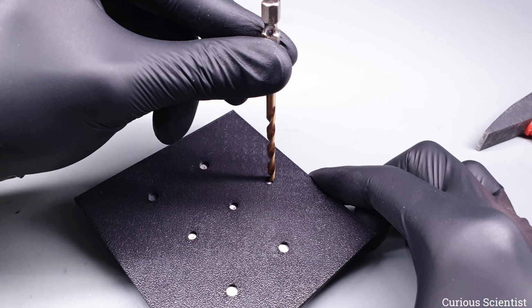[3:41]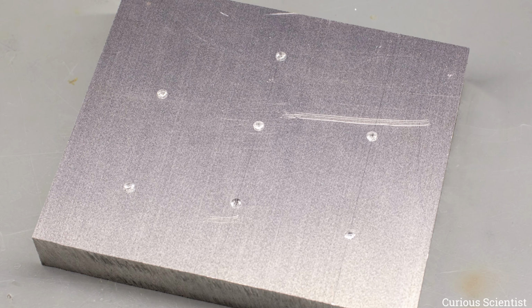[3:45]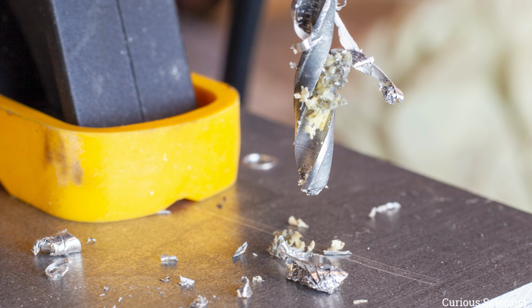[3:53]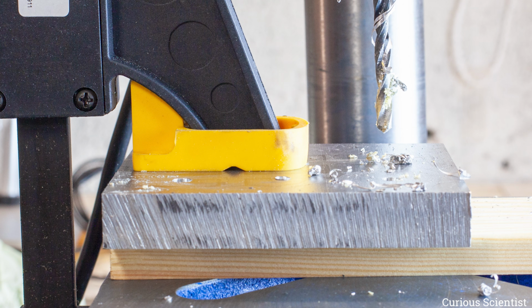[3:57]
To be extra sure, I did not directly drill the 4mm and 5mm holes. I used center drills first, in 2 steps, to be sure that I had the holes aligned as well as possible. I must mention that I do not have the best drilling equipment. Apart from a wonky chuck, I do not have a proper vise to hold the specimen, so I had to improvise.
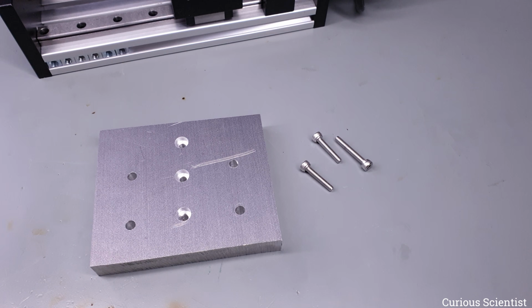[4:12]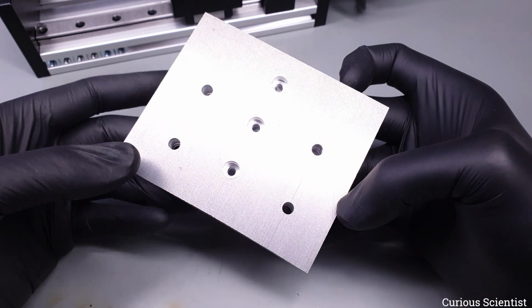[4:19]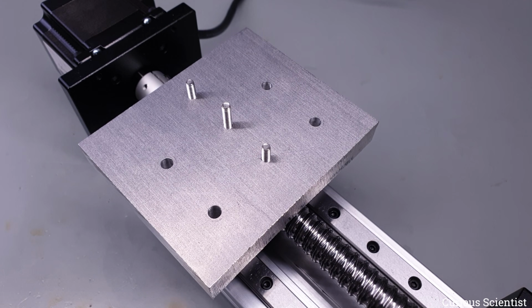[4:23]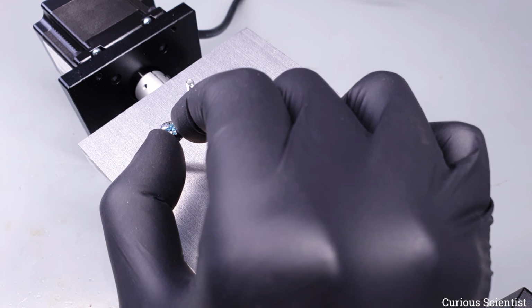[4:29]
After reading about drilling holes in aluminum, I also placed a piece of wood under the block to avoid making an ugly hole when the drill bit goes through the plate. It worked well. Furthermore, I had to make sure that the heads of the M4 bolts that are supporting the microscope are sunk into the plate. So, I drilled their hole with an 8mm bit. This was necessary because otherwise I could not mount the aluminum block on the linear actuator's block. It had to have a flat bottom. The other 4 screws go through the plate from the top side, so their holes were untouched.
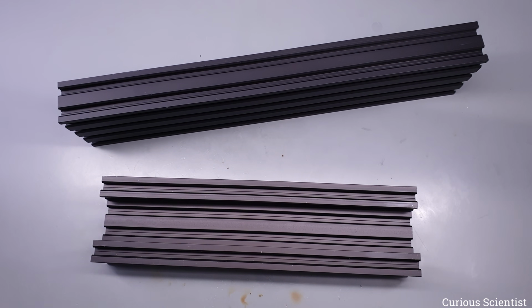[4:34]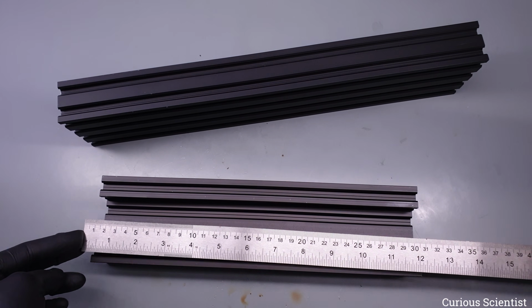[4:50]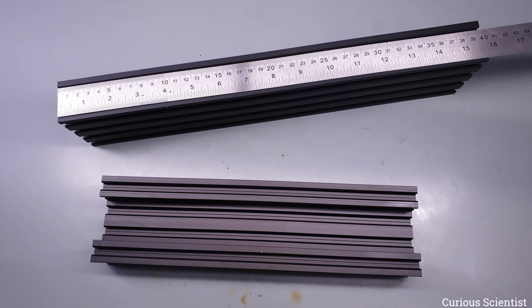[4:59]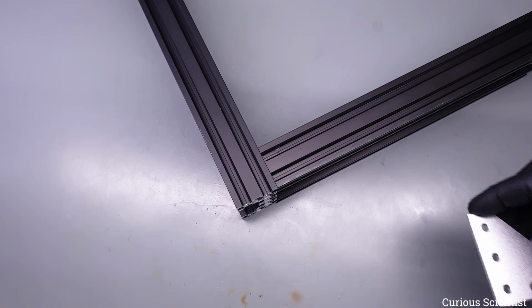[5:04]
To make the whole structure stiffer and more stable, instead of using 2 separate 2040 profiles as previously, I used a single piece of 2080 C-beam profile. This piece is much stiffer due to its shape and due to the fact that it contains more material in a single piece. I originally bought the 750mm piece and then got it cut into 2 pieces, a 400mm piece and the rest. The 400mm piece became the vertical part, the other will be the horizontal part, and the base for the XY stage. I bought some corner brackets for joining the pieces together.
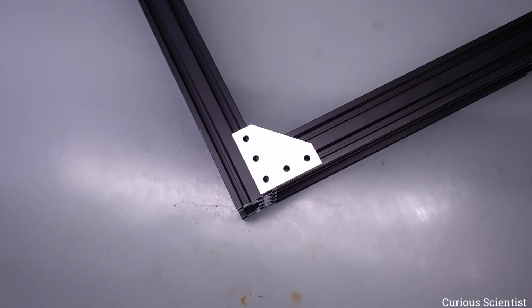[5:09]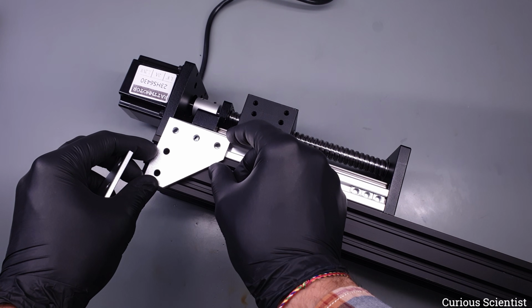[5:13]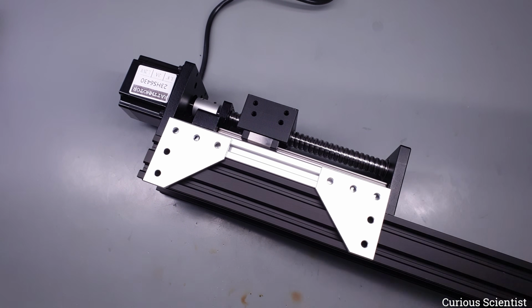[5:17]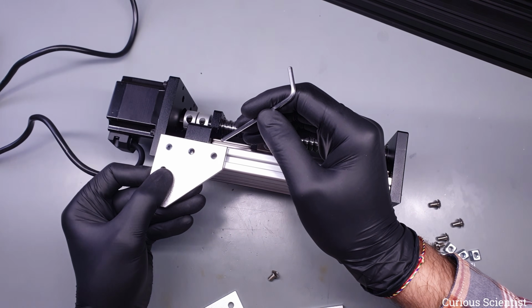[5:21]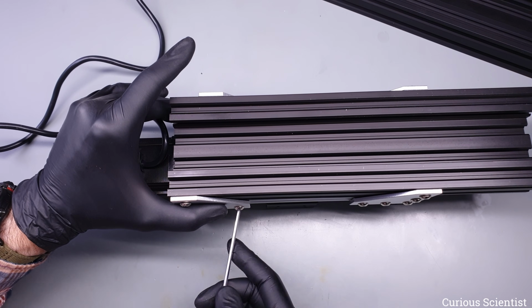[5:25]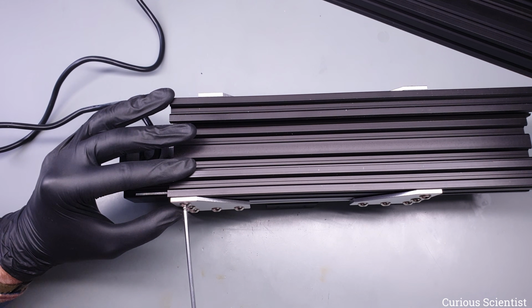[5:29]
I can use this bracket both for the C-beam profiles and the linear actuator, which makes the whole assembly much simpler. I first attached the linear actuator to the vertical piece. I used all the possible mounting positions, so in total, 20 screws hold the linear actuator and the vertical beam together. 8 are in the vertical beam and 12 are in the linear actuator. It should be strong enough. Then I moved on to the microscope.
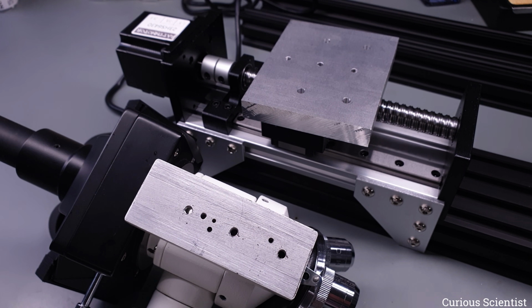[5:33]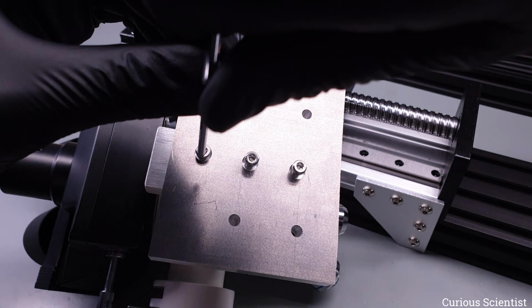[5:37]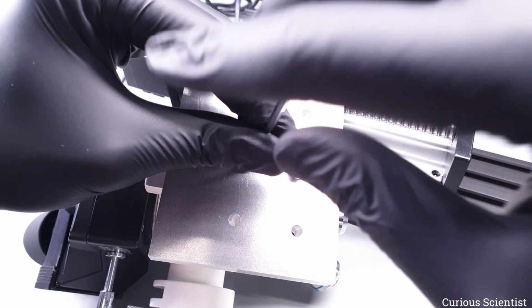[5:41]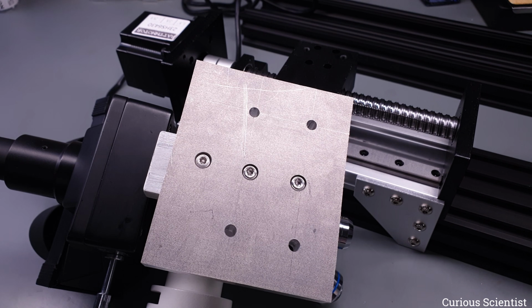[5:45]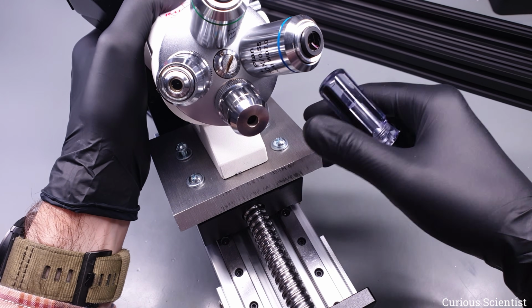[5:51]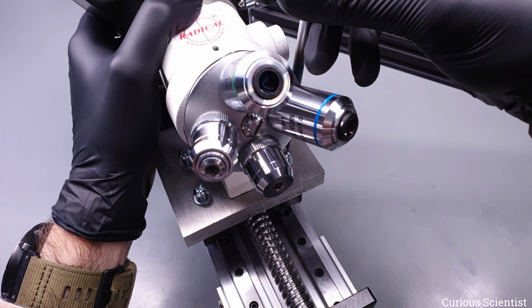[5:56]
I removed the microscope from the previous rig and attached the previously drilled aluminum block to it using 3 M4 bolts. Everything fit smoothly and the heads of the bolts did not stick out. This is very important because this side of the block should sit on the actuator's block, so it should be totally flat. In the following step, I mounted the block with the microscope on it onto the linear actuator. I just used 4 long enough M5 bolts and washers.
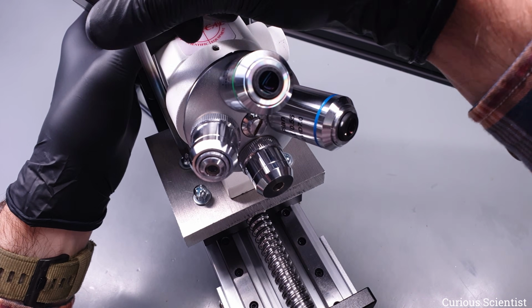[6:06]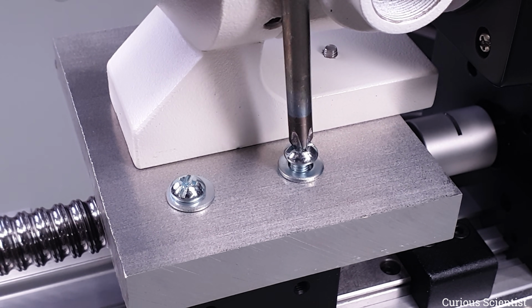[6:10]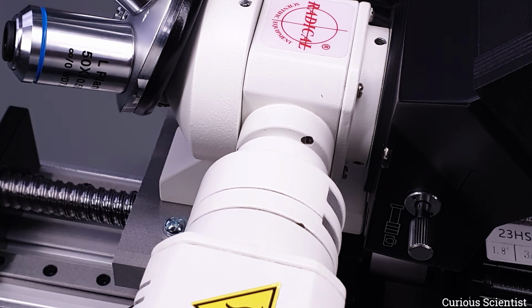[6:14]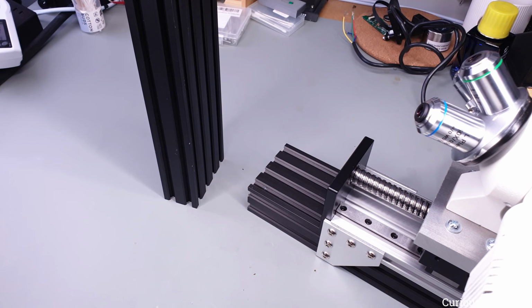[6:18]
To make my work easier, I removed the light source from the microscope. This made the mounting easier because the microscope was more balanced and it allowed me to access one of the 4 screws. I could not access it otherwise. After finishing the last screw, I mounted the light source back onto the microscope. It is held in place by a single set screw. Finally, I attached the bottom profile to the microscope.
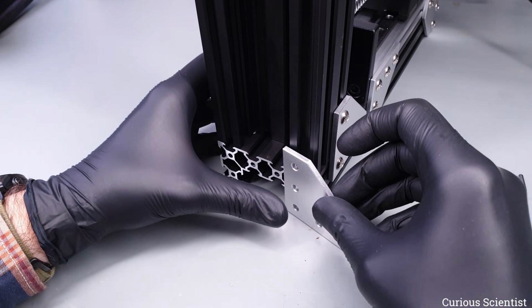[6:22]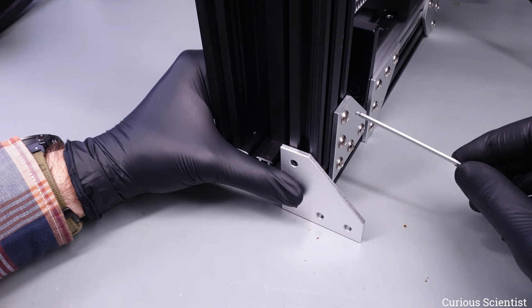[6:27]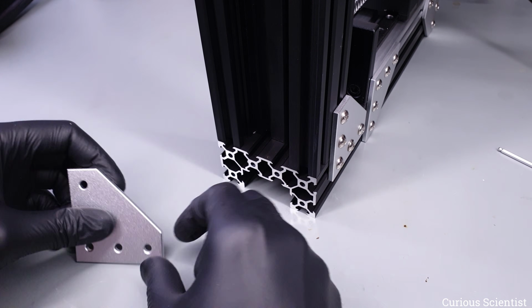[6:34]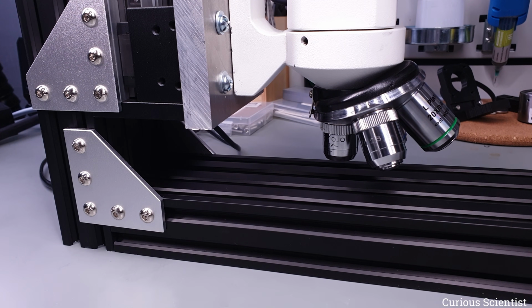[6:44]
I used the same corner brackets that I used for attaching the linear actuator to the vertical piece. I attached the bracket to the top side of the bottom profile, where the aluminum profile has the 2080 wide section and not where it has the 2 ears. There is a roughly 10mm gap left between the 2 brackets in case I want to move the actuator further down. But, as it can be seen, when the actuator is at its bottom position, the shortest lens is almost touching the bottom profile. So once the XY stage is mounted, I will be able to move close to the subject and I won't need to move all the way to the end of the actuator's range.
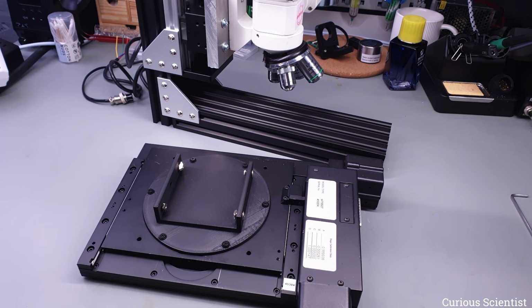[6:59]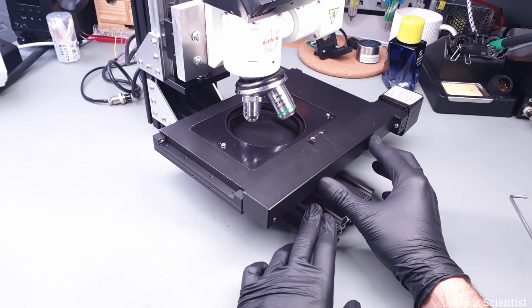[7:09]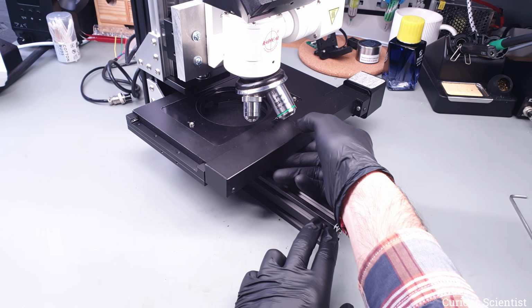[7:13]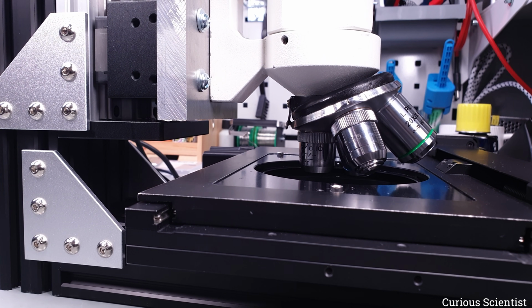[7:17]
So the last step is to mount the XY stage. I did not change anything in the 3D printed mount because the stage is still mounted on a 2080 profile. I still use 4 bolts, it is enough. Once the stage is mounted, it becomes clearer how much space remains between the lenses and the stage. If I move the actuator all the way towards its end, I can move the lenses through the hole on the XY stage. So, the distance between the stage surface and the lenses is sufficient.
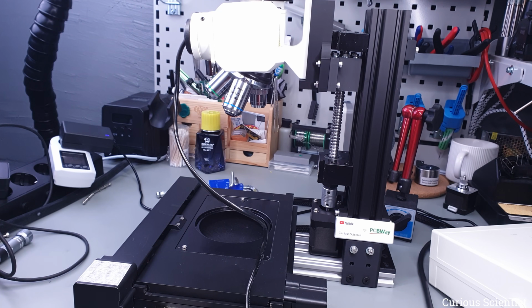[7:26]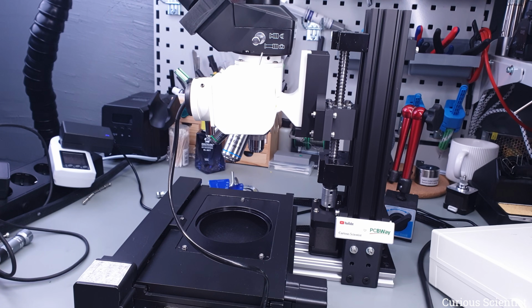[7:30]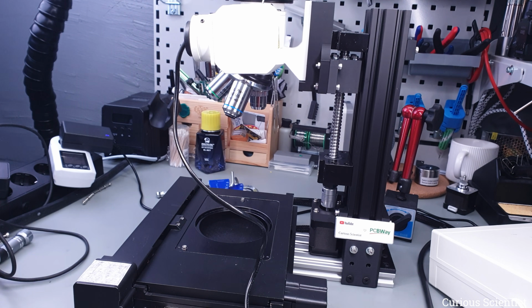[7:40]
If you remember, this was an issue in the previous project because I had to print another, longer microscope holder piece. After all, with the initial piece, the microscope was several centimeters above the usable working distance of the lenses. There was no way to bring the lenses to within their working distance. This is not an issue with this build.
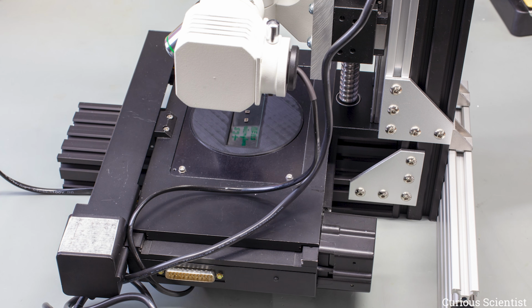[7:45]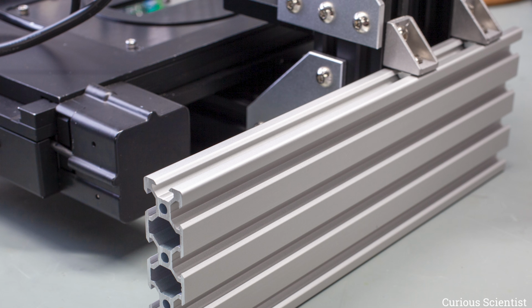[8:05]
Once the XY stage was in place, I could notice that the microscope became somewhat unbalanced. This is because the light source, the 2 stepper motors of the XY stage, and the cable for the XY stage are all located on the right side of the setup. To counter this unstable condition and prevent tipping, I reused the 2080 profile from the previous build and attached it to the back of the vertical beam in a way that hinders the whole structure from tipping towards the right side. With this extra stabilizer, the setup became very sturdy.
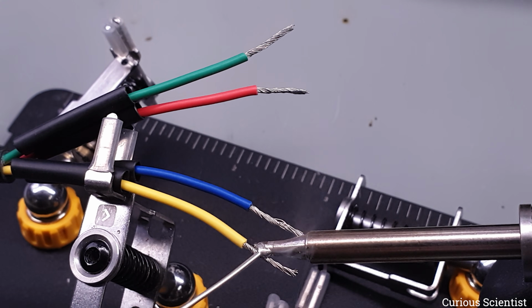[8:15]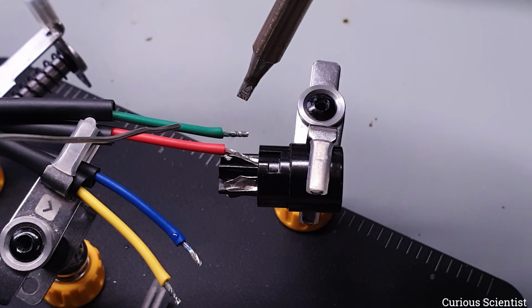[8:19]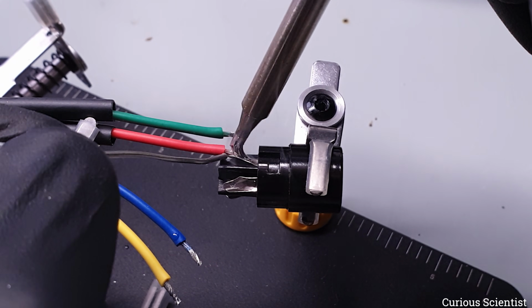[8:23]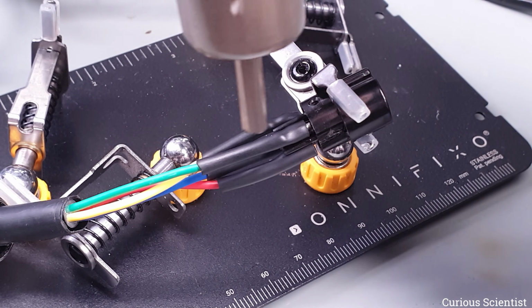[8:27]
Since there is a new stepper motor in the linear actuator, I had to do some soldering as well. My control circuit is equipped with a 4-pin GX16 socket, so I soldered the corresponding male plug. I put heat shrink tubes on both the individual wires plus an extra to hold everything together.
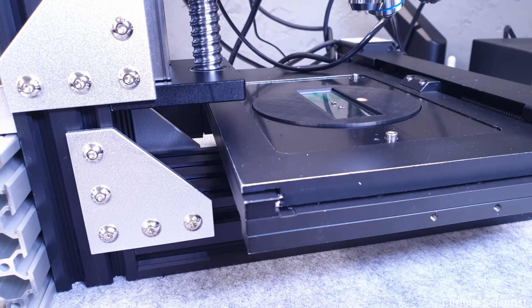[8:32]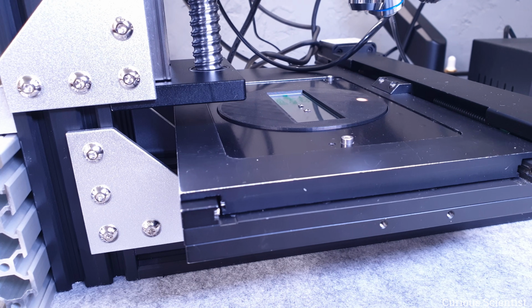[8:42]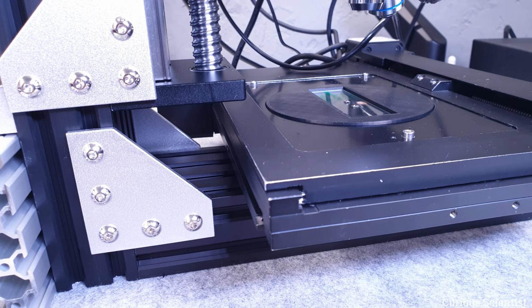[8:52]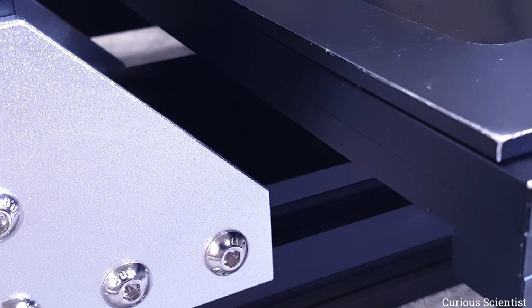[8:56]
Once everything was put together, I made a test homing along the Y-axis. This was a big issue in the previous build because I could not use the whole positive range of the stage along the Y-axis. With this build, I have enough overhang so that the XY stage can be in the center and I can have the full range of the Y-axis. This means that in both the positive and the negative directions, the stage can move 33mm from the center. It is a bit tight towards the vertical axis, but there are still a few millimeters to spare.
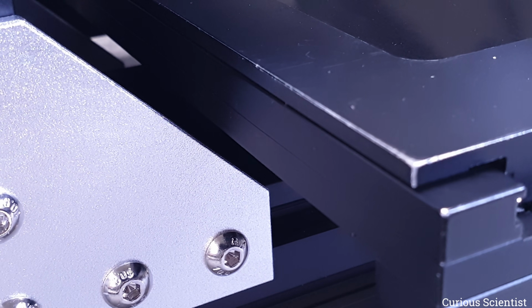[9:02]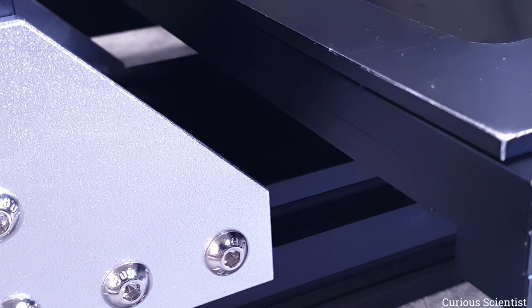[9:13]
Probably I could move the bracket down to be extra safe, but I think it is fine this way. The limit switch is pressed before the stage physically touches the bracket, and the stage won't move at extremely high speeds to create enough inertia to hit the bracket, so it will be okay.
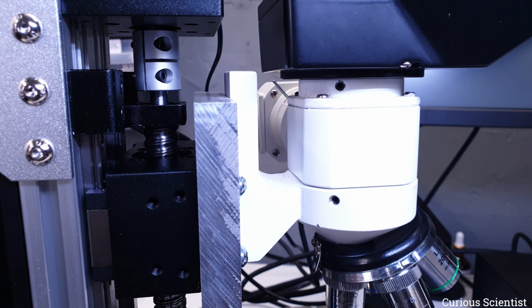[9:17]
I also tested the homing along the Z-axis. This is still done by the TMC2209 driver's stall guard feature. There are no limit switches. The actuator slowly travels up until it hits the support bearing. When the motor stalls, it creates back EMF, which is detected by the driver circuit, and the motor is stopped. Then, the motor drives the microscope down by 50mm, which is the center of the actuator's range, and this point is considered as the 0 point of the Z-axis.
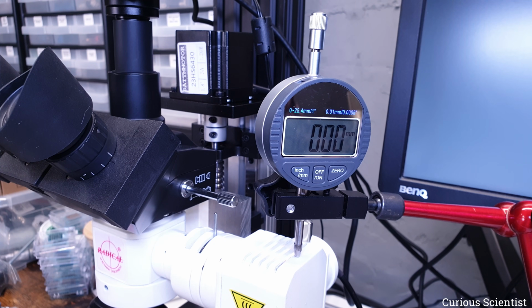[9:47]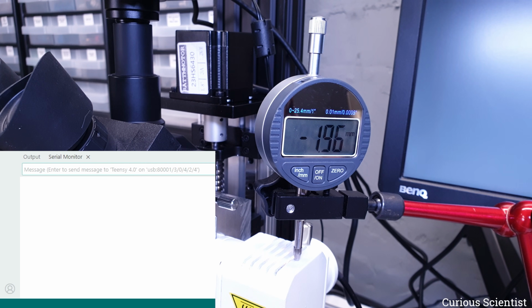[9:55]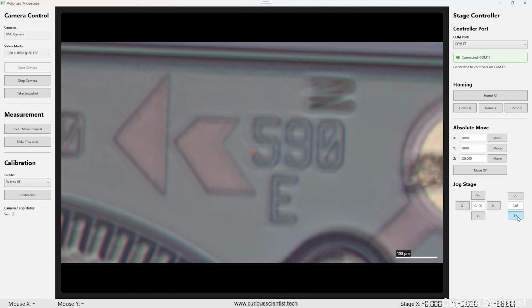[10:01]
Similar to the previous setup, I attached the dial gauge to the microscope and then sent the Z-axis to different positions to see how accurately it could move. Overall, I'm fairly satisfied with it. The numbers did not match to the last digits, but they were close enough. Then, I did more testing through my software as well.
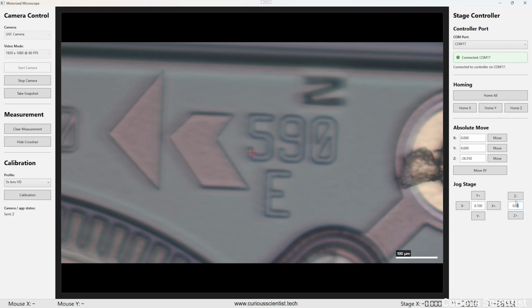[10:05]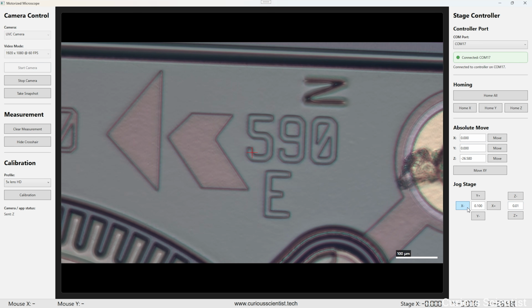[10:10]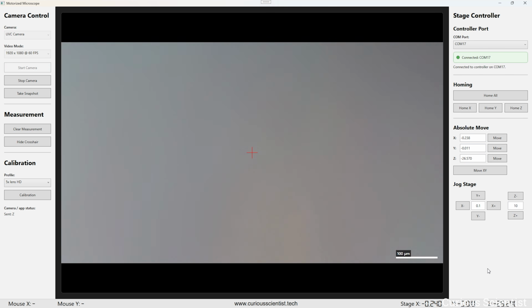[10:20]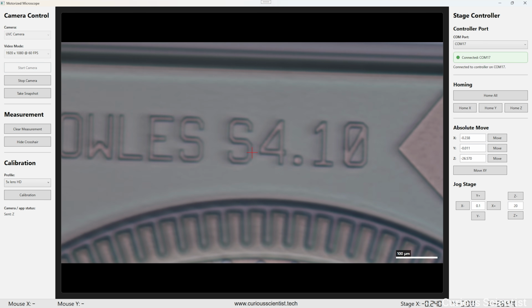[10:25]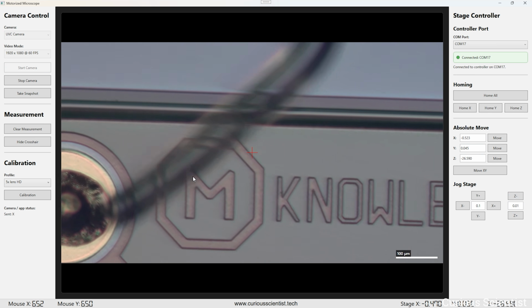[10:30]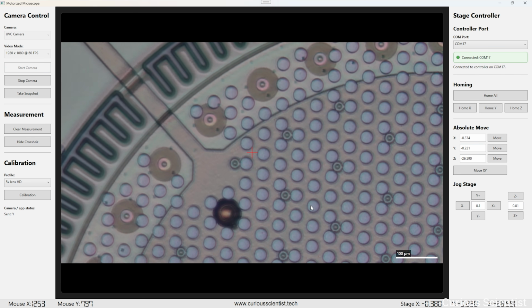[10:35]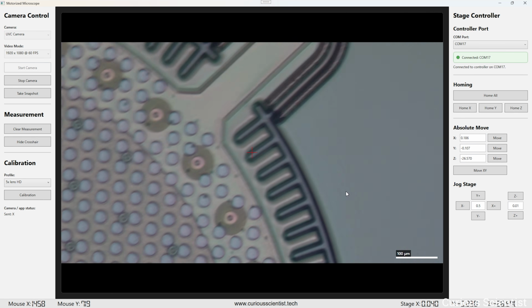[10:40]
I was especially interested in the backlash, so I tested the z-axis by first focusing on the subject under the microscope and then moving it up by, let's say, 10 mm from this position, and then back to the initial position where the subject was in focus. It was almost always in focus after moving it back to the initial position. There was a tiny backlash, but when I nudged the z-axis by 10 micrometers, I could get the subject back in focus immediately. So, this means two things. The stage, and with this all three axes, have 10 micrometer step resolution, and the backlash is somewhere around 10 micrometers, which is acceptable for me.
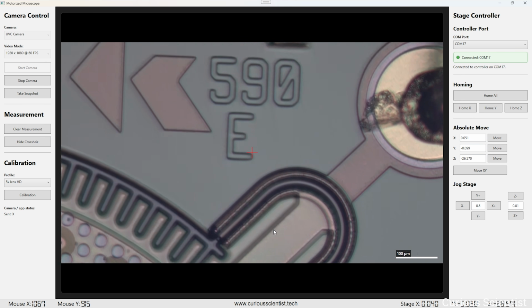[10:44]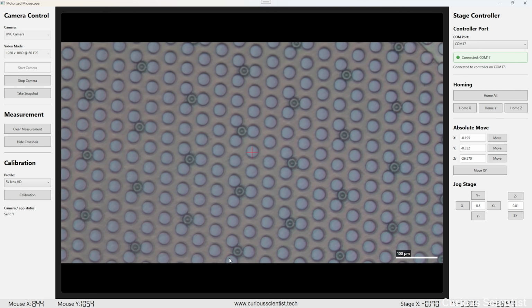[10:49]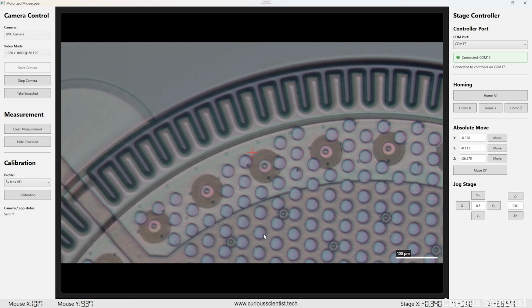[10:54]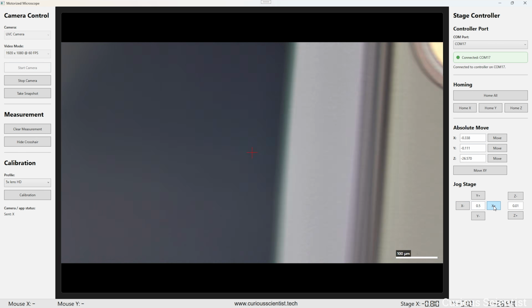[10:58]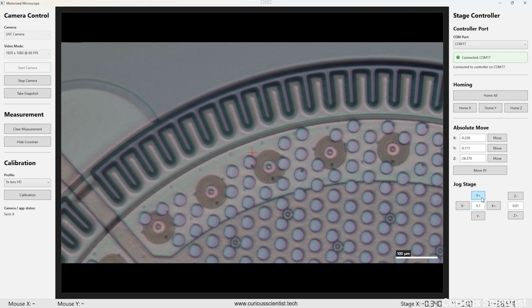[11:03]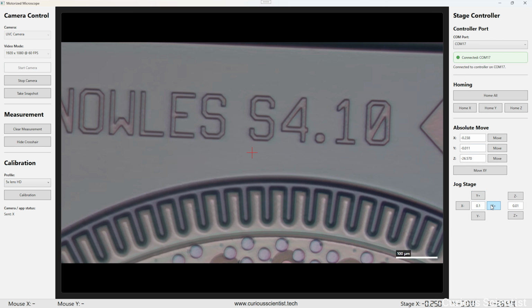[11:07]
Actually, the x and y axes are a bit better, they have at least 1 micrometer resolution. I'm pretty sure that with some tuning and adjustments, I could improve this, but I'm already satisfied with the result. Furthermore, the vibrations disappeared. Not only the vibrations from the movement itself along the z-axis. I also noticed that the whole microscope tolerates the vibrations much better. I used to notice vibrations even with the original setup when I touched the table or walked around it. Now they are absent. I think that the whole setup became stiffer overall, so the vibrations are much better dampened.